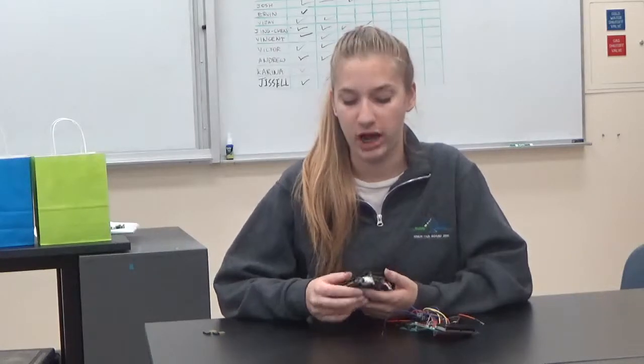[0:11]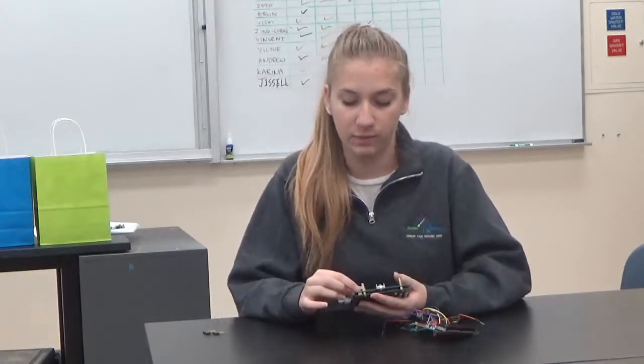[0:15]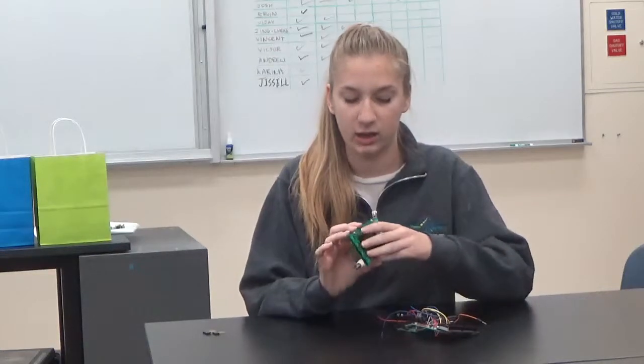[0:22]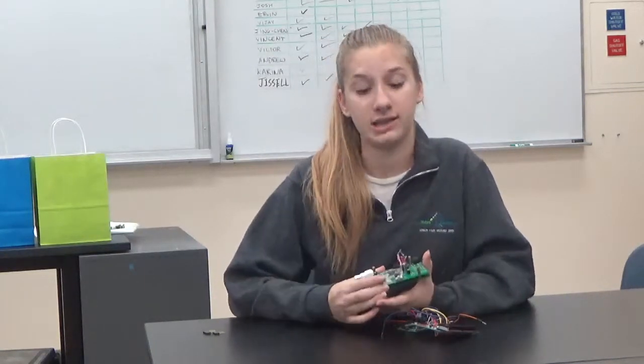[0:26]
So I want to give you guys an update for what I've done since the previous video. Once I got my EKG to work on the breadboard, I went on to making my oscilloscope. It came in a kit, and I put all the different components in. I soldered them all in and then assembled the oscilloscope itself. And from there, I went to test it.
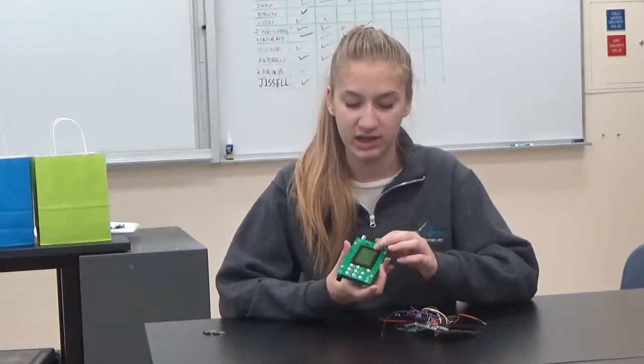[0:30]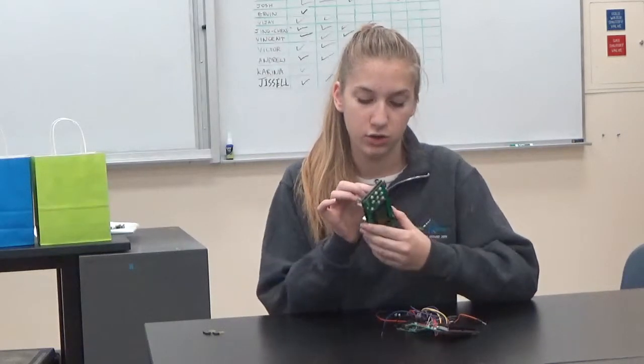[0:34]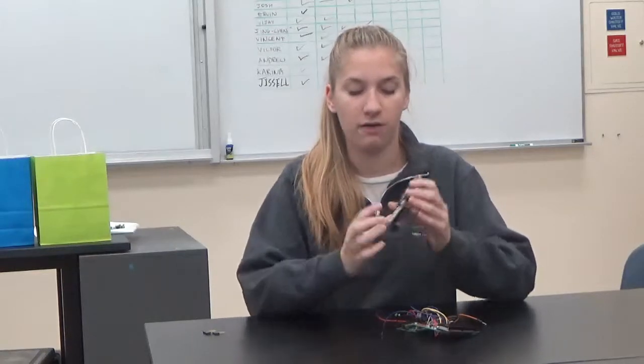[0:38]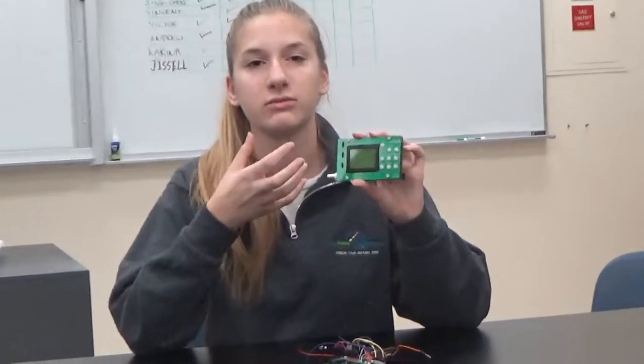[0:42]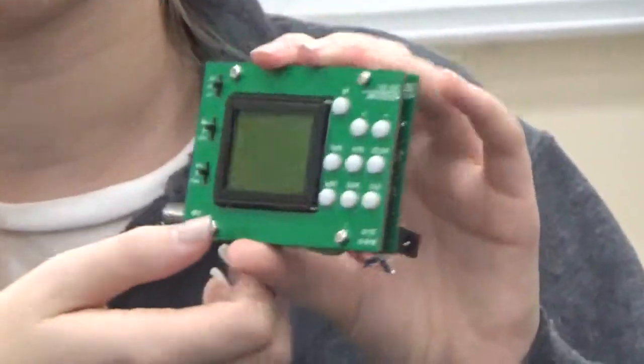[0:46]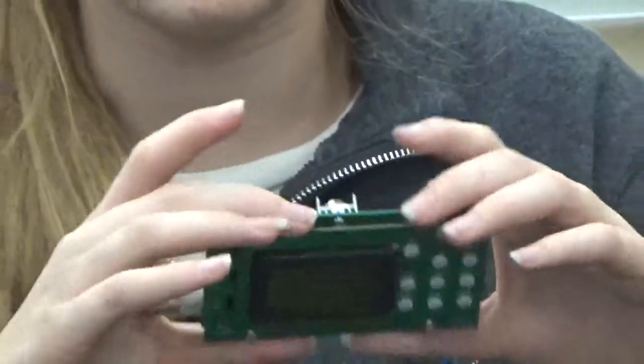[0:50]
However, it didn't work. At first, the screen didn't light up, but I found that by turning the potentiometer here, I could change the contrast of the screen. So that allowed the different buttons, or the different digital components of the screen, to show up. However, the oscilloscope would still not recognize signal. So that involved a lot of troubleshooting on my part to figure out why it wasn't working.
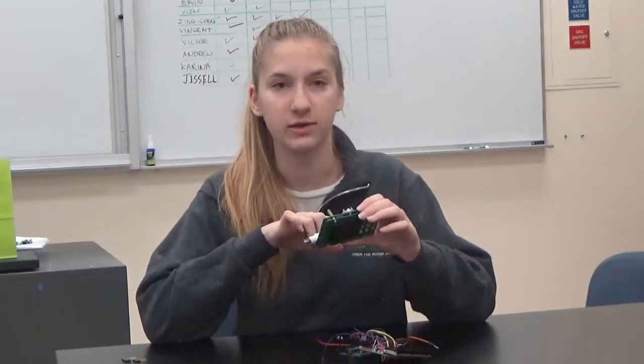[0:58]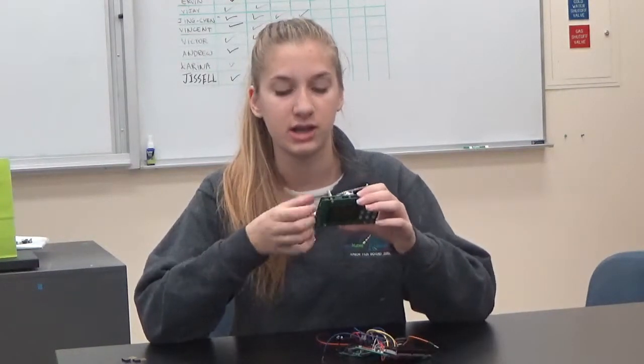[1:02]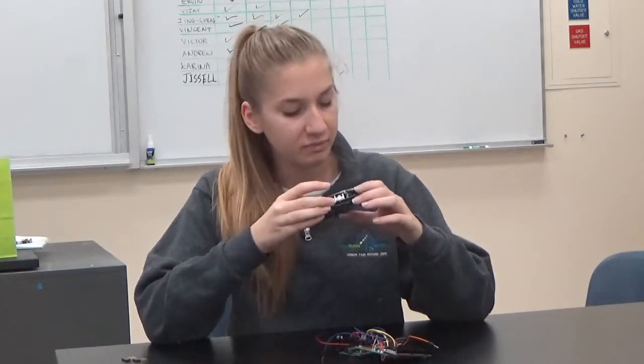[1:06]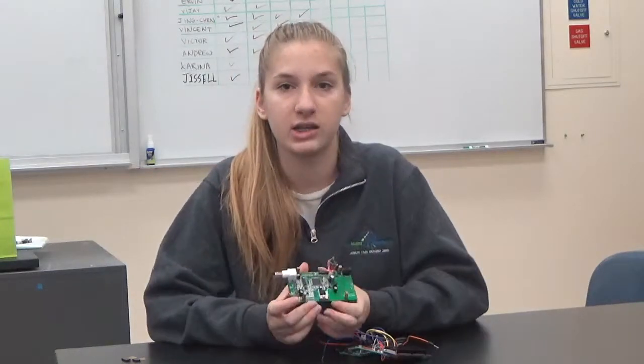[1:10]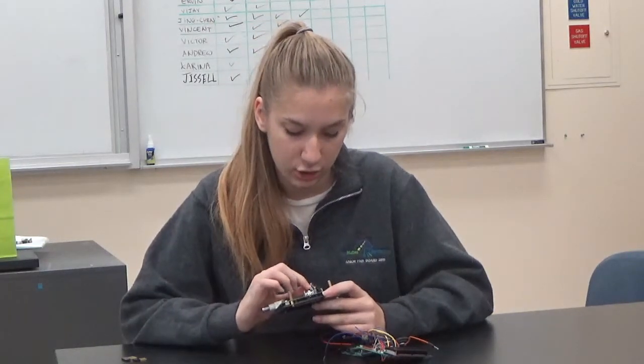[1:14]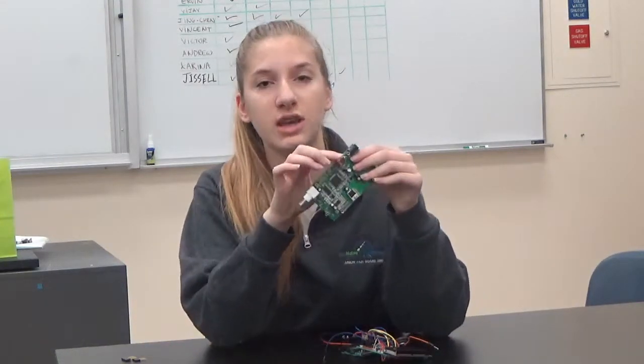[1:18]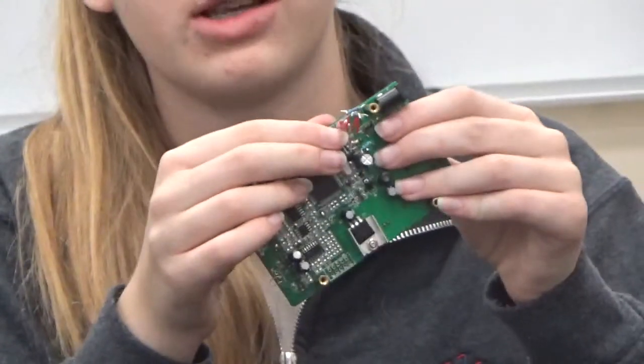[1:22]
I went through and checked the orientation of the parts. I used a multimeter to check connections and make sure they are how they should be. I did notice that the PCB provided itself was missing some parts. So I went to attach the parts that were needed, as you can see here. However, that still didn't solve the problem of the oscilloscope not recognizing signals.
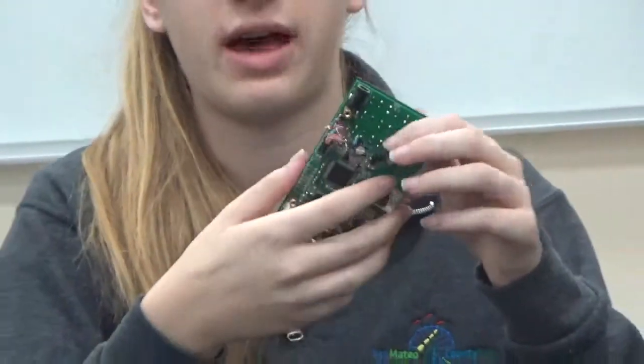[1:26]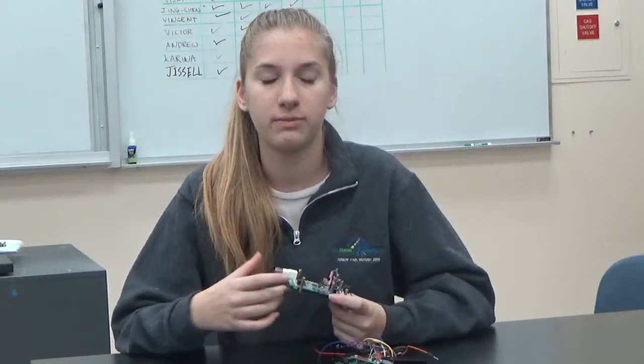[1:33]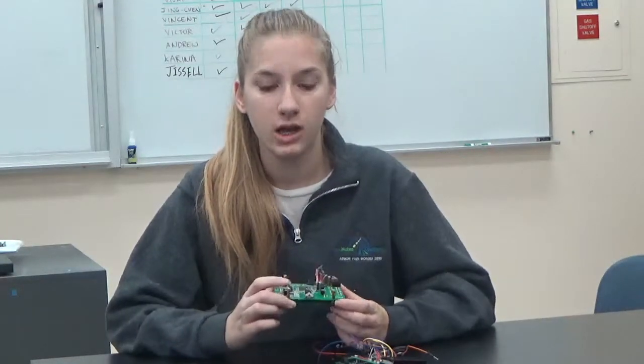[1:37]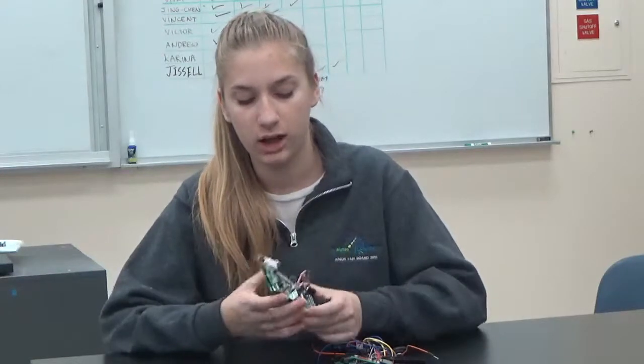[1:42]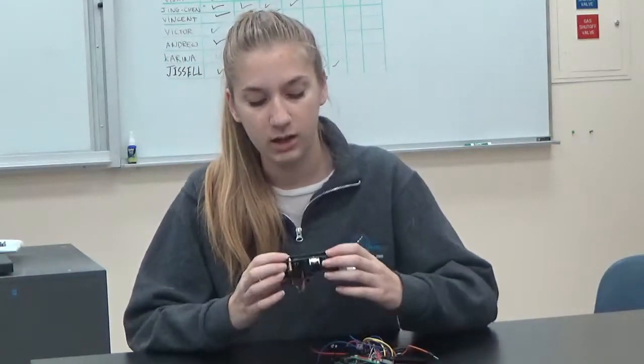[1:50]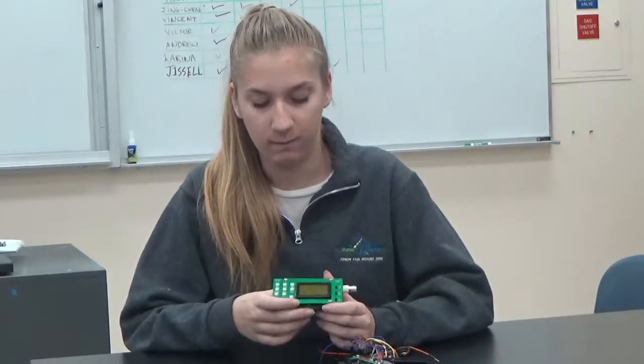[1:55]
And it turns out that the kit itself was also sent with assembly instructions that weren't updated, which made it a very large problem to assemble it properly. So right now I'm waiting for a new kit to come in the mail from a different manufacturer so I can still get an oscilloscope to work, because right now this thing was inherently doomed to not work.
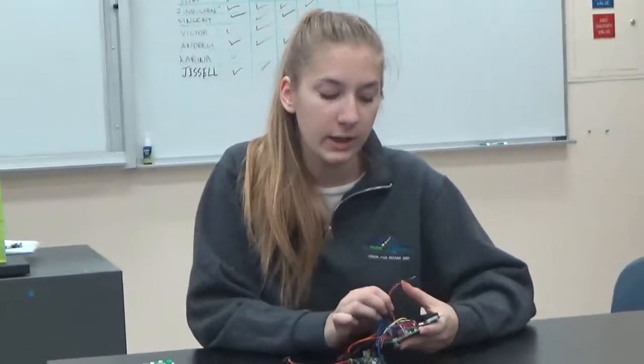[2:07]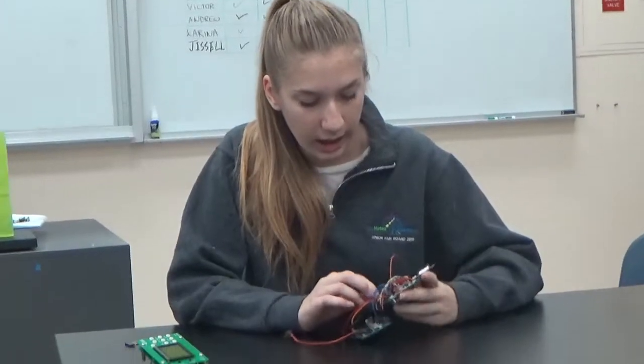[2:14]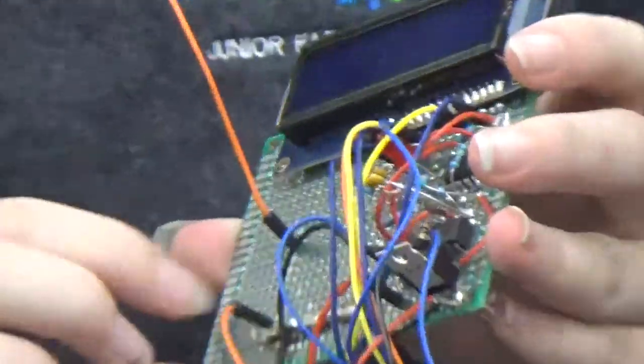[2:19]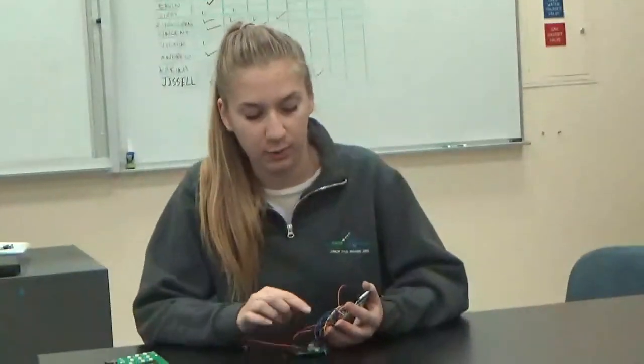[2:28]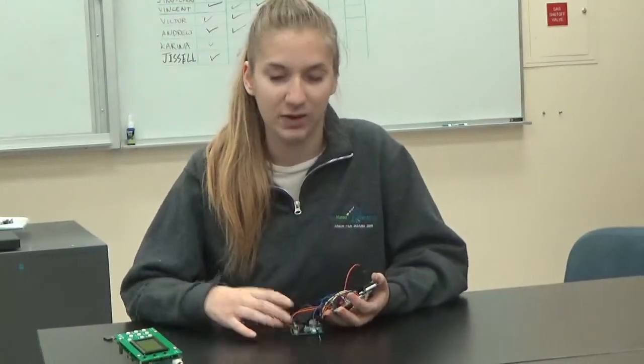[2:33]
So while I wait for that, I went on to transfer my EKG from a breadboard to a perf board. A perf board allows the project to be more compact, more professional. And as you can see here, you're soldering the parts together from little hole to hole. So I went through and transferred each part from the breadboard to the perf board. And once they were all assembled, I went to test it. And with my luck, it didn't work.
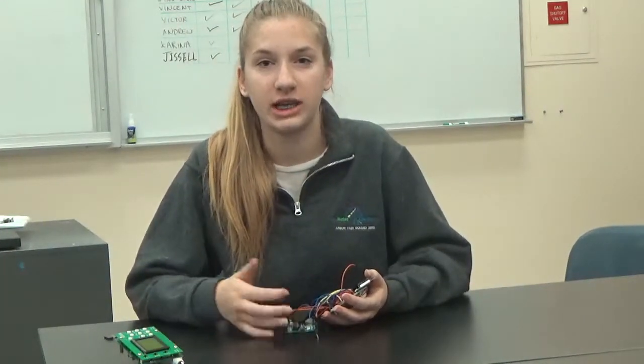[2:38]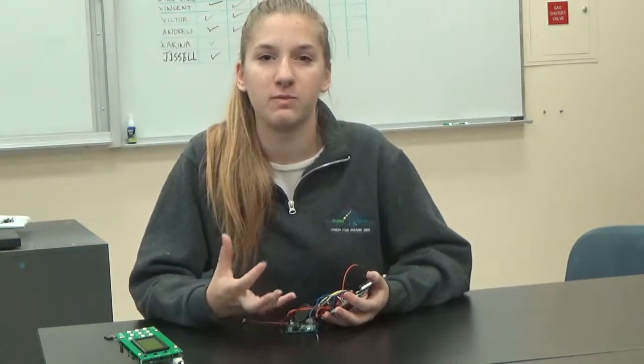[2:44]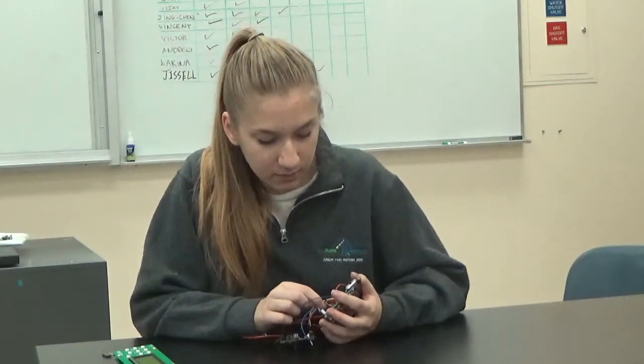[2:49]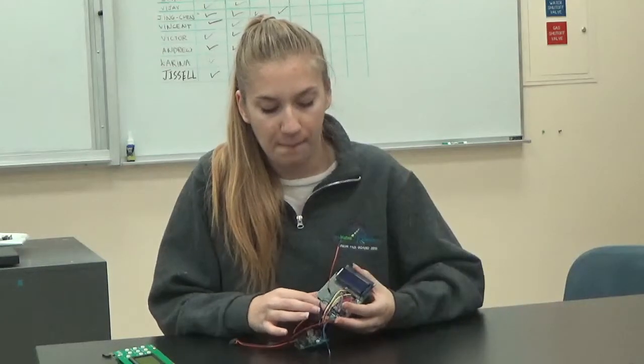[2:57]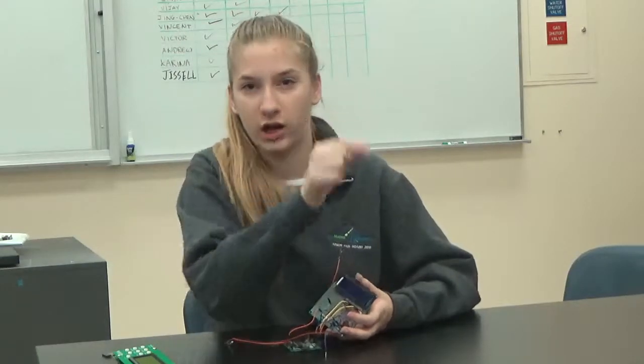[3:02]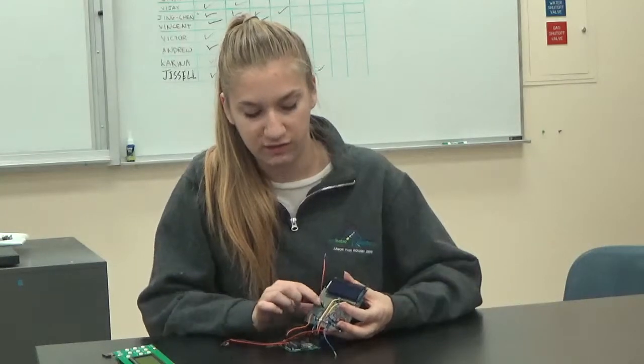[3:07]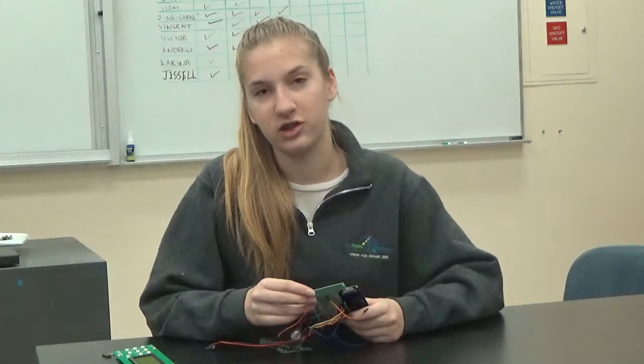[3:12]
So I went through troubleshooting how I did with the oscilloscope, checking connections and using the schematic to make sure the parts themselves were put in the correct orientation, the correct order. And everything appeared fine. So I later figured out that it might be a ground problem. It's really hard to create a ground on a perf board because it involves stretching out solder over many different holes. So I moved ground to a different spot, making it slimmer, and using a wire to attach it all together. However, that still didn't solve the problem.
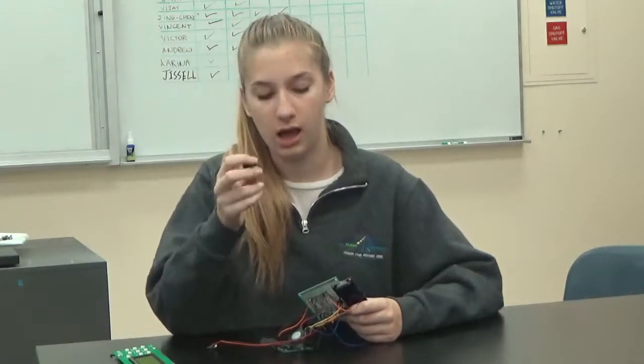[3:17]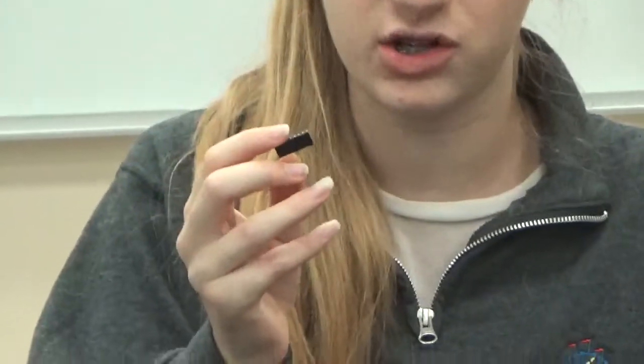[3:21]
So in the future, I plan to use these sockets and solder them in, and then attach the ground wires to the female openings here. And hopefully that will ensure that ground is connected how it should be.
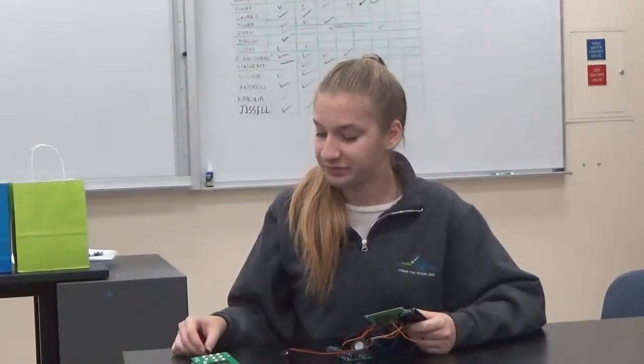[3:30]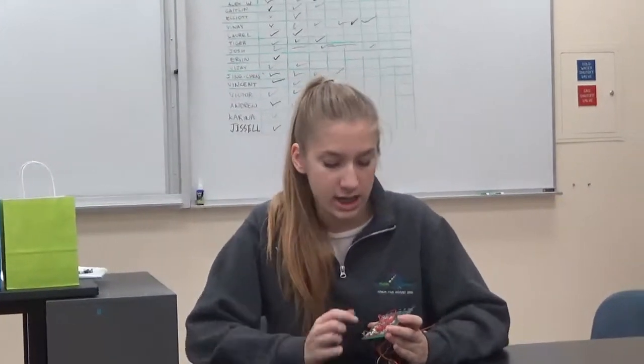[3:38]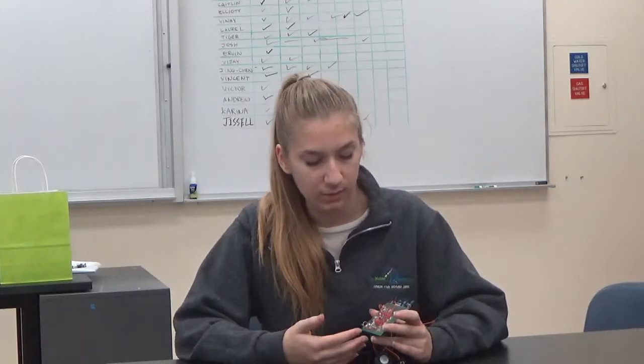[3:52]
Another problem that I think is causing my project to not work is that there's too much solder. I learned that when you have too much solder, it can cause resistance between the two parts, which is really bad for the project as a whole. So I plan to go back and try to take off the solder, and if that still doesn't solve the problem, transfer it possibly to a PCB or do it again on a perf board where I can control the amount of solder being applied to each pin.
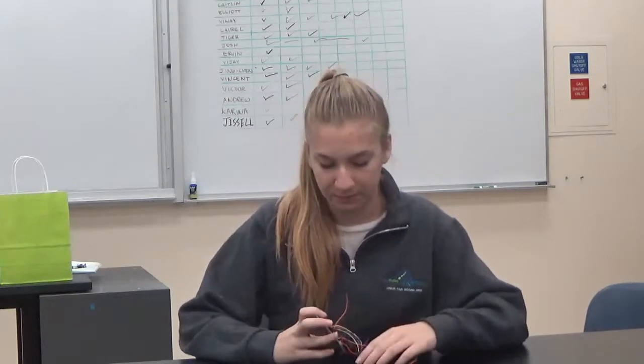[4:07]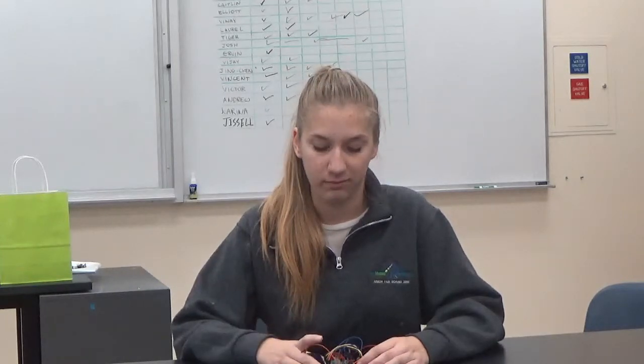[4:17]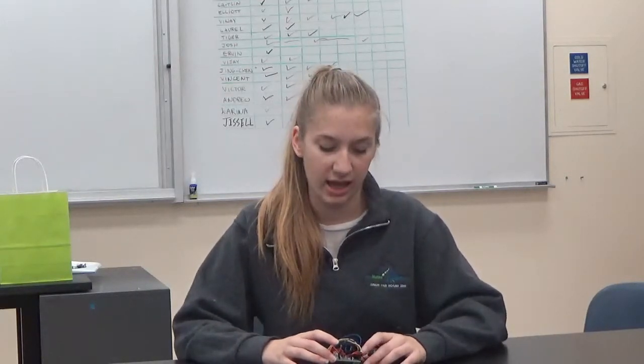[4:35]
So all in all, I learned that in engineering, it is rare that things work the first time. It's really about perseverance, making sure that in the end you're leaving with a complete project. So even though Blue Stamp is ending, my project doesn't end there. I'm waiting for all my kits, and I'm really excited about troubleshooting to make things work properly. It's been a great learning experience, and I think troubleshooting is a very important principle to engineering, so I'm excited to do that in the future.